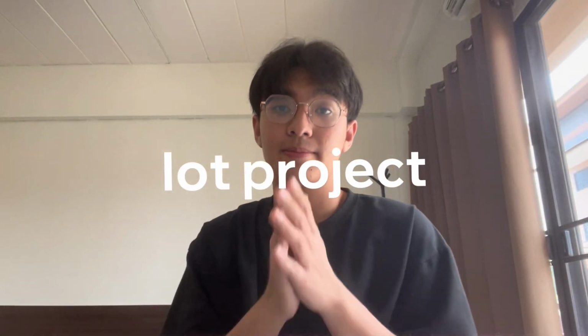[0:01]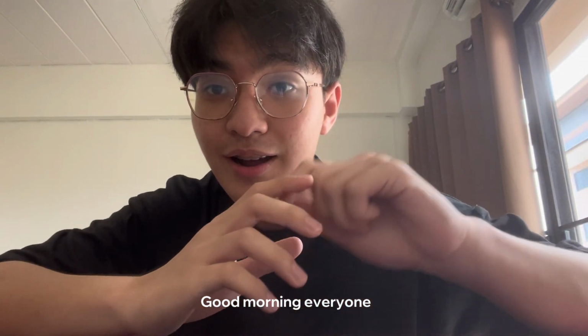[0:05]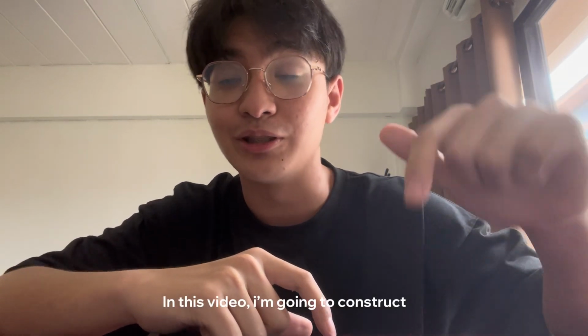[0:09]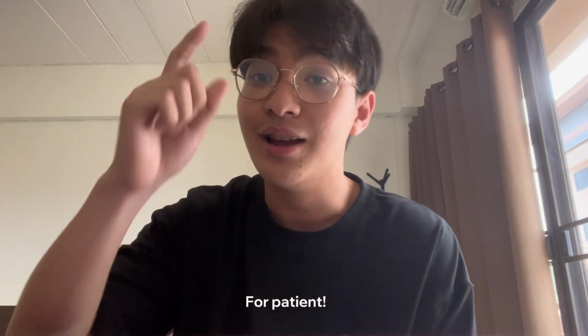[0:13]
Good morning everyone. Currently I'm studying biomedical engineering, and in this video I'm going to construct the healthcare monitoring box for patients in the hospital. Let's go.
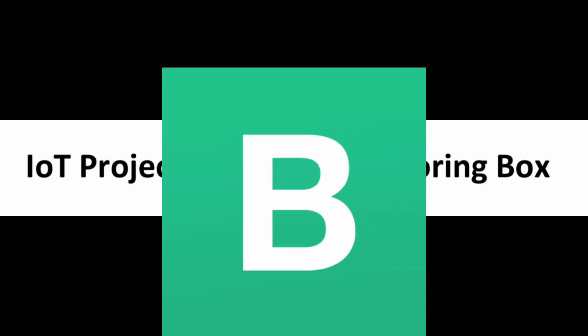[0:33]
Yes, so before we begin, I would like to talk about the purpose of this project first. This is an IoT-based health monitoring system that allows users to track the temperature and humidity of a patient room in real time using the Blynk application. However, this box provides only basic measurements, including the oxygen in blood, heart rate, room temperature, and room humidity.
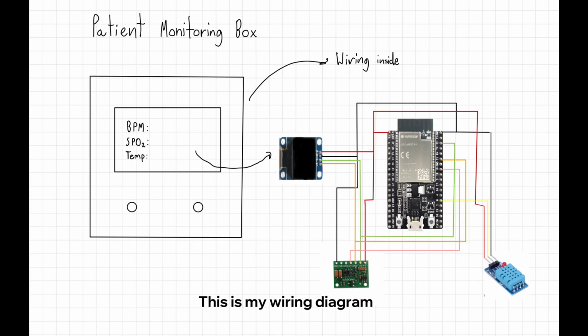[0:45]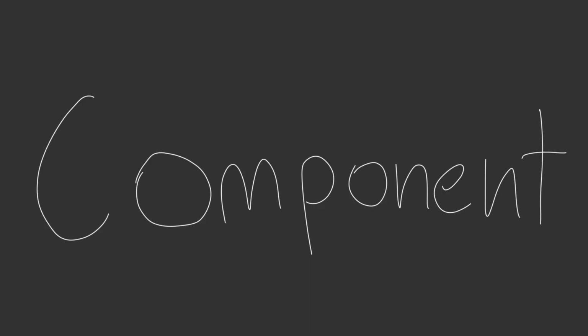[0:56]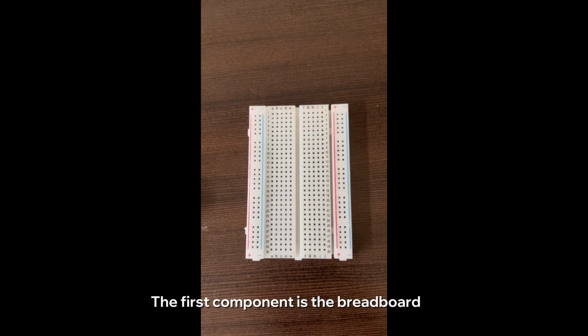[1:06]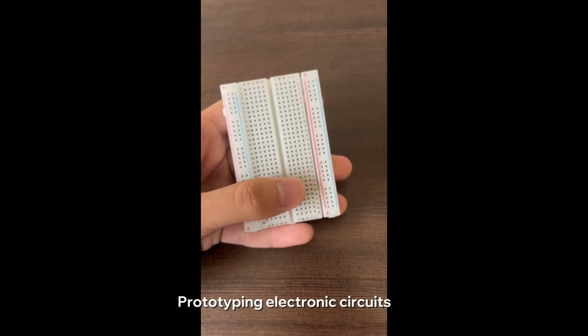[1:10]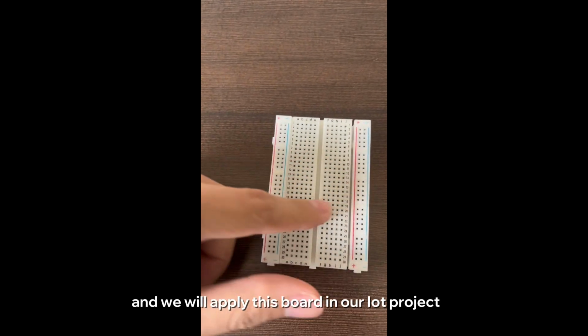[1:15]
Yeah, so this is my wiring diagram and drawing of the box. Sorry for my rough drawing, but we will follow this plan for the project. Okay, as you can see in the wiring diagram, these are the components that we will use in this project. Okay, let's take a look at each component. So the first component is the breadboard, which is a tool used for prototyping electronic circuits without the need for soldering, and we will apply this board in our IoT project.
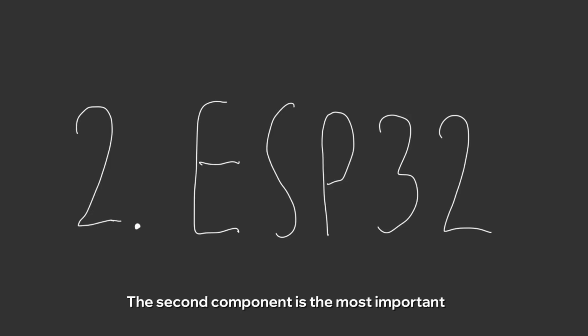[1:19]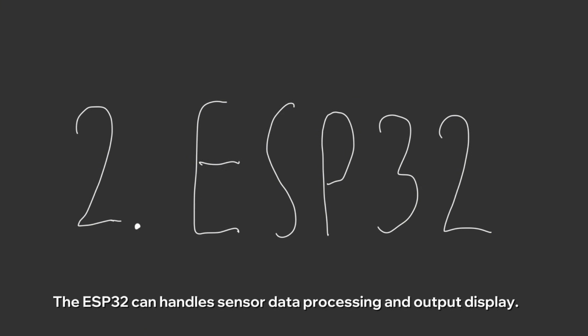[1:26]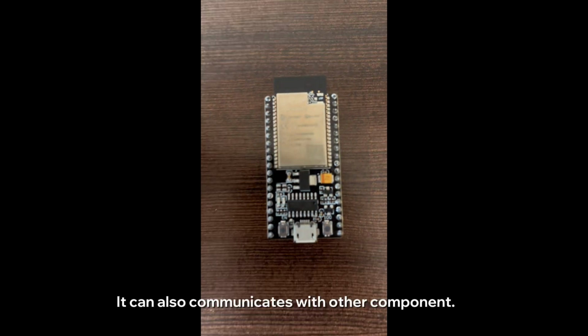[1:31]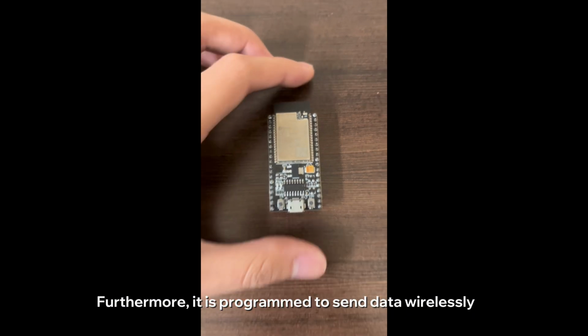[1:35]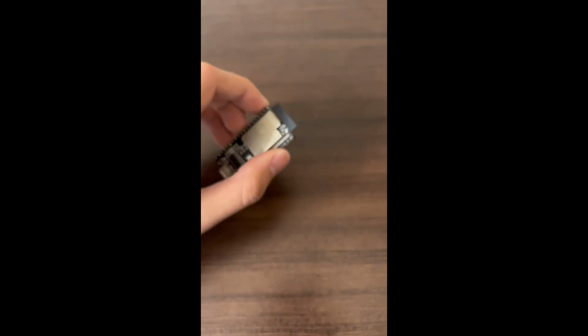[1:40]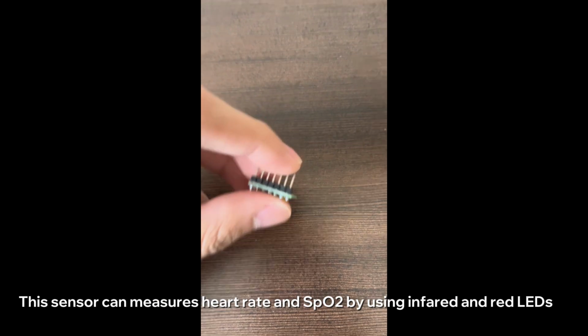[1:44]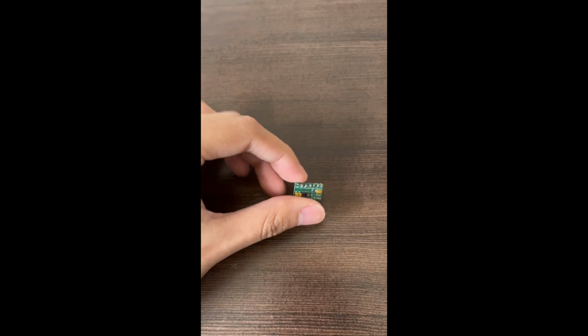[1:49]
The second component is the most important. It is the ESP32, which is the core of the system. And the ESP32 can handle sensor data processing and output display. It can also communicate with other components. Furthermore, it is programmed to send data wirelessly via Wi-Fi to connect with the Blynk application. The third component is the pulse oximeter. This sensor can measure heart rate and SpO2 by using the infrared and red LEDs.
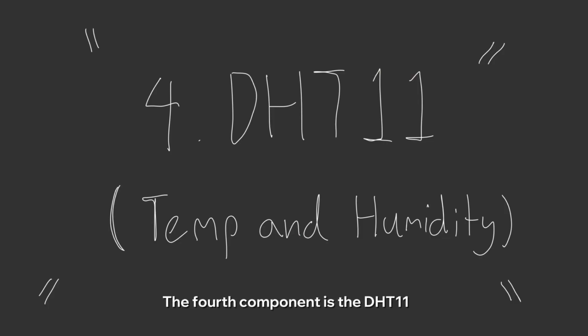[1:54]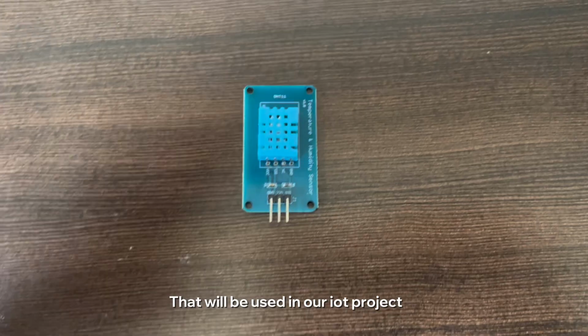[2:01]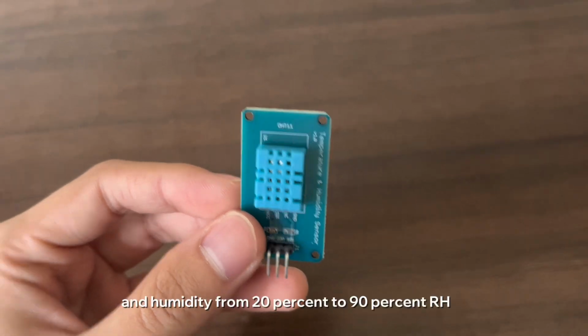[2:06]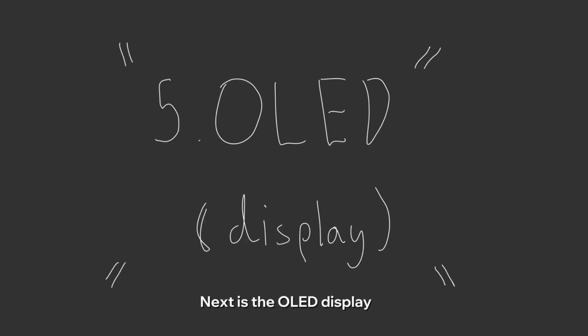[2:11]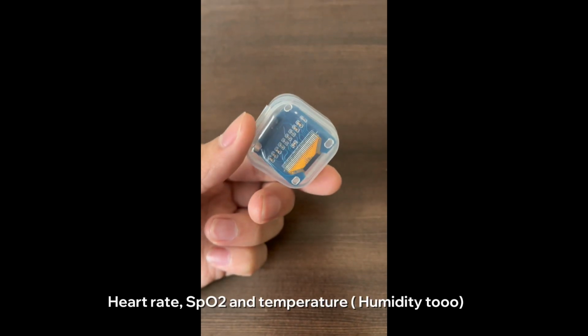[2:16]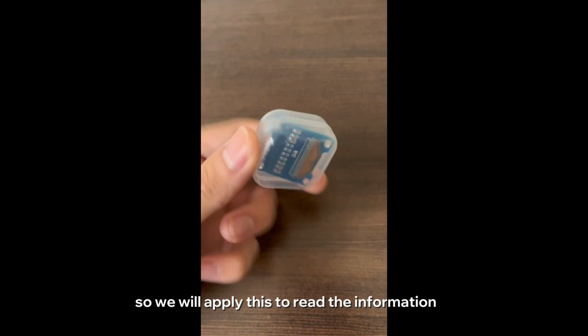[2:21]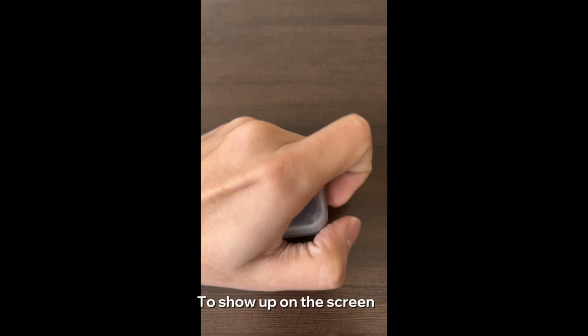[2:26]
The fourth component is the DHT11. It is a digital temperature and humidity sensor that will be used in our IoT project. It measures temperature from 0 Celsius to 50 Celsius and humidity from 20% to 90% RH. Next is the OLED display. The OLED screen can show real-time readings of heart rate, SpO2, and the temperature. So we will apply this to read the information that comes from other components to show up on the screen.
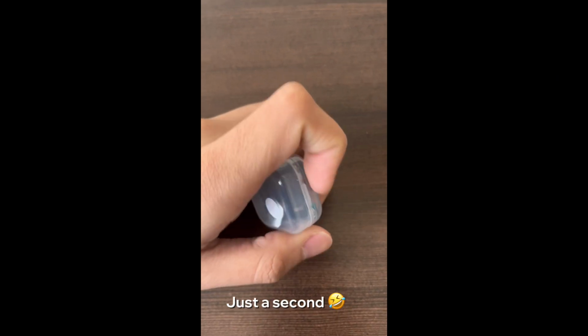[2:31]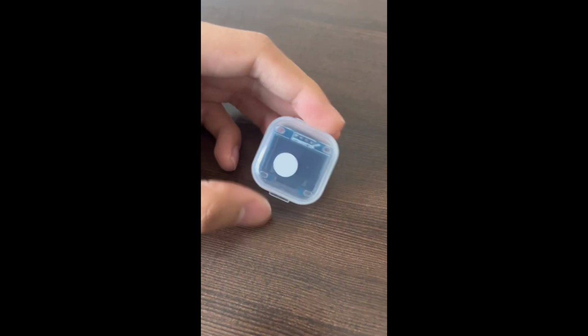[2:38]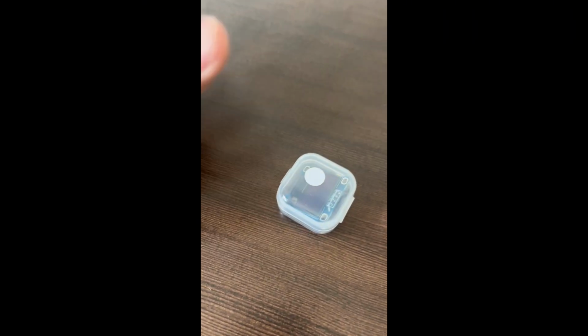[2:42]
Okay, let me open it for you guys. Just a second. I can't open it, bro. Okay, never mind. Okay.
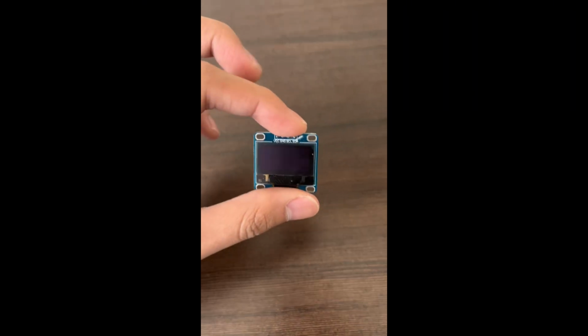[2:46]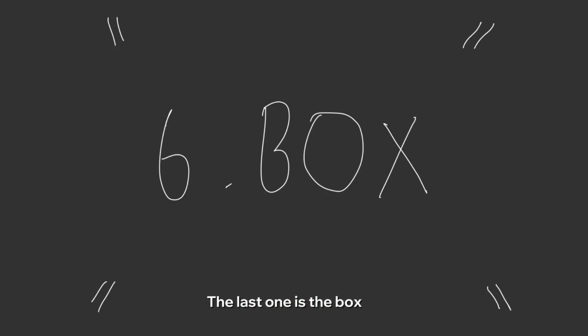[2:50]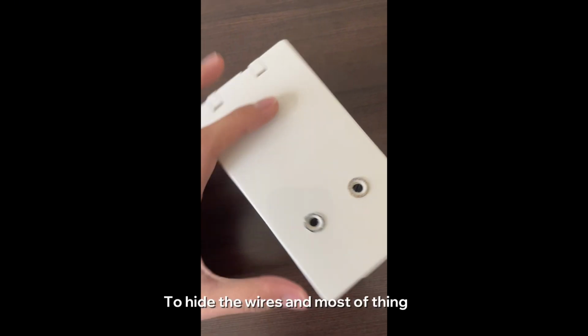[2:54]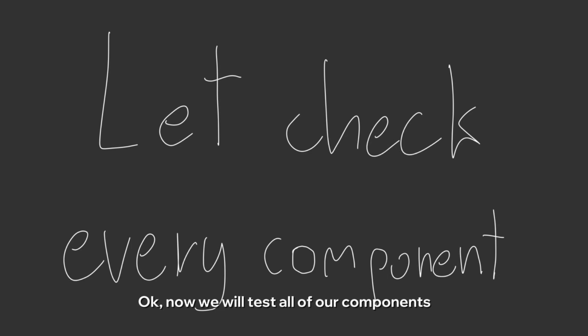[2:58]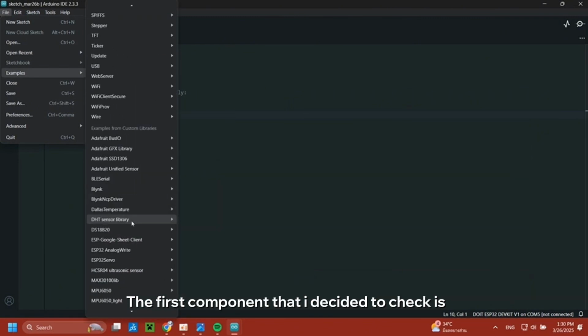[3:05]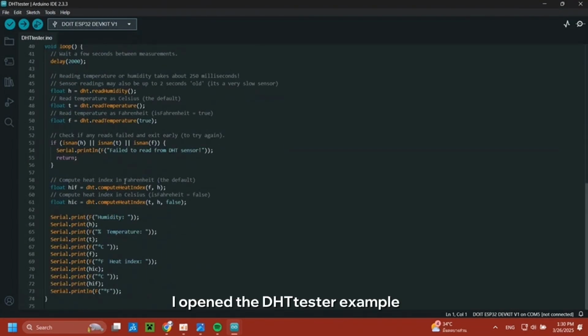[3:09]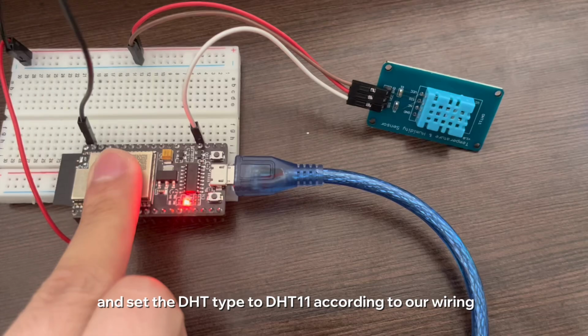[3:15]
The last one is the box that we will put the components inside to hide the wires and most of the things. Okay, now we will test all of our components by combining them with the code provided by the libraries. The first component that I decided to check is the DHT11. I open up the DHT tester example and then I change the pin to 15 and set the DHT type to DHT11 according to our wiring.
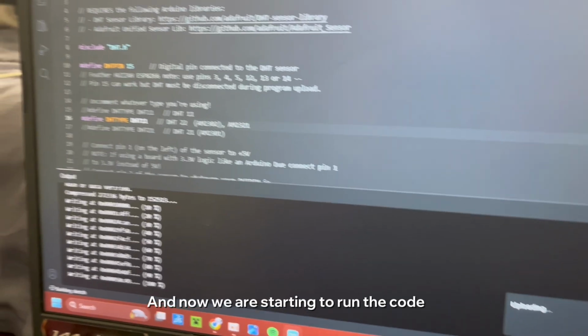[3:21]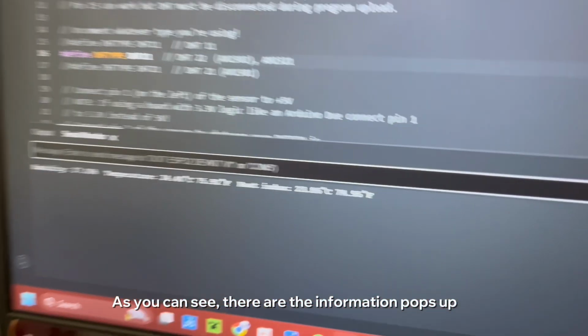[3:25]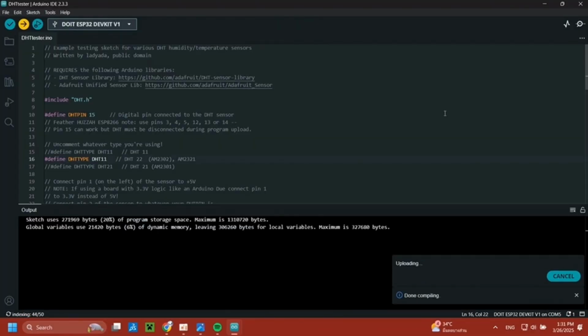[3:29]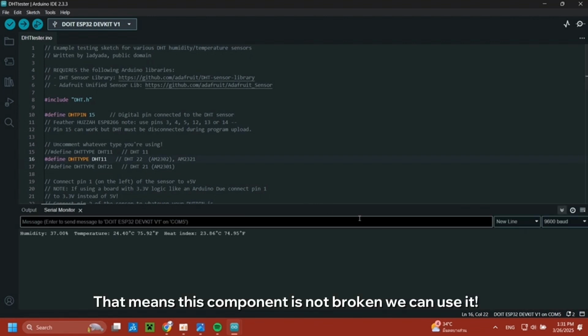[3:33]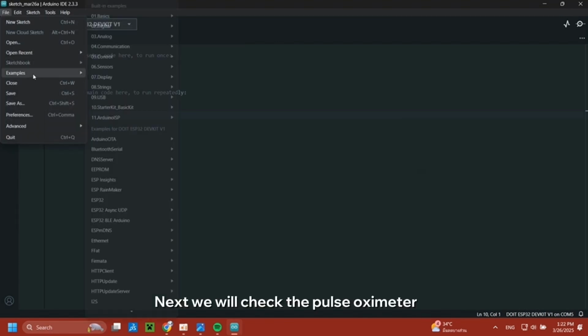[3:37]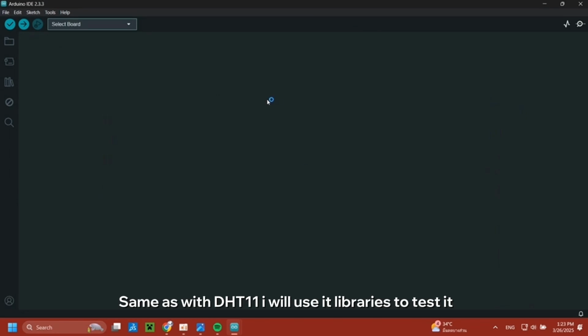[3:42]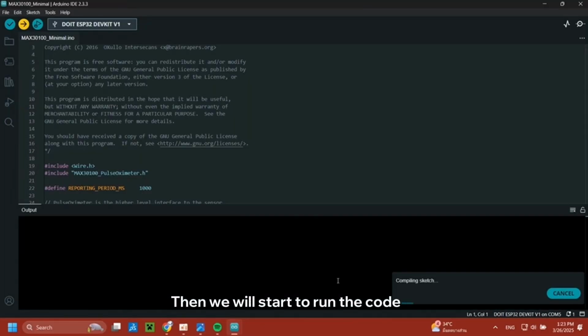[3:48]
And now we start to run the code, and as you can see, the information pops up in the serial monitor. That means this component is not broken, we can use it. Okay, next we will check the pulse oximeter. Same as with the DHT11, I will use this library to test it. This is a picture of our wiring, then we will start to run the code.
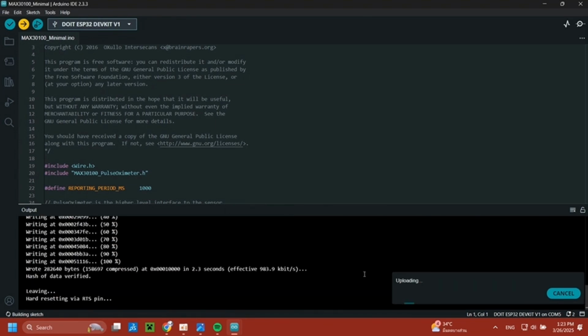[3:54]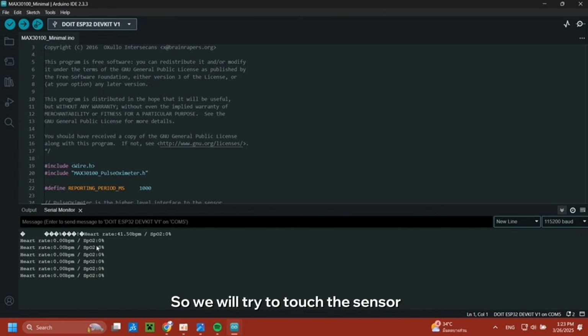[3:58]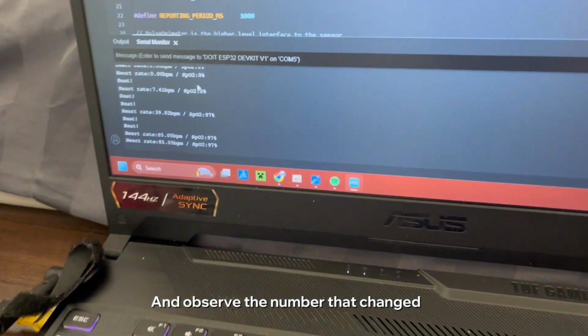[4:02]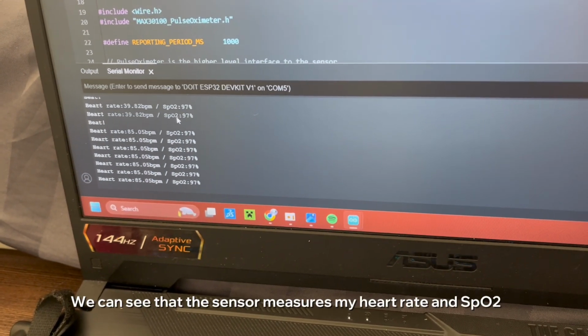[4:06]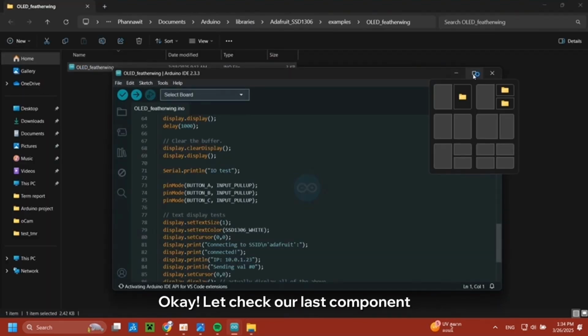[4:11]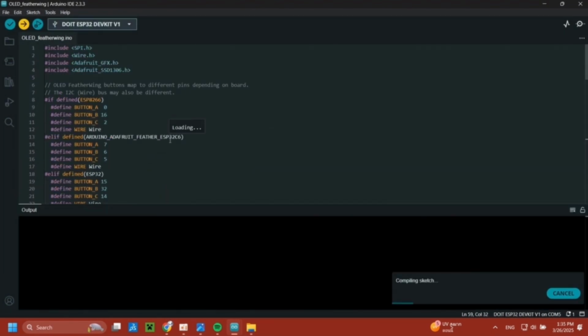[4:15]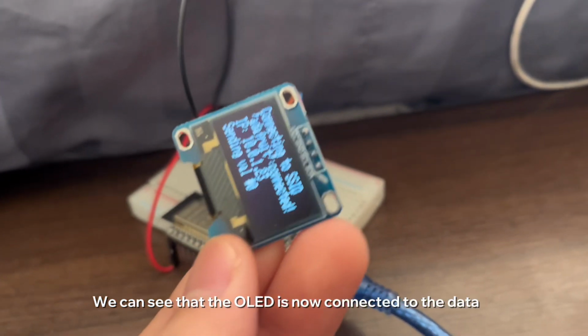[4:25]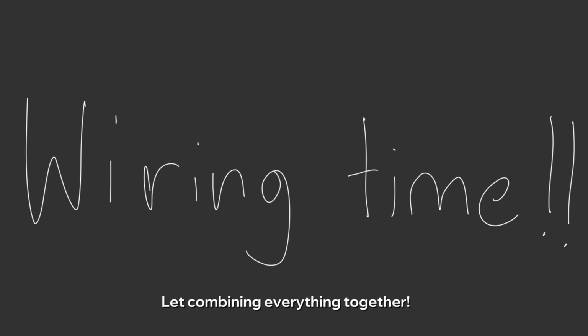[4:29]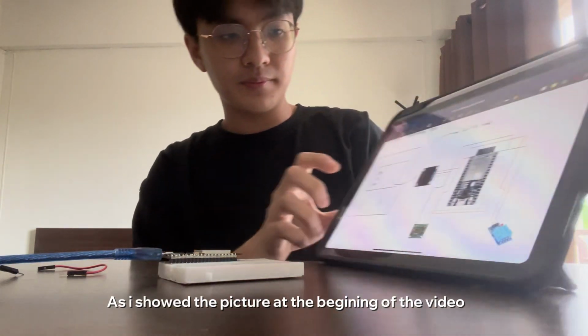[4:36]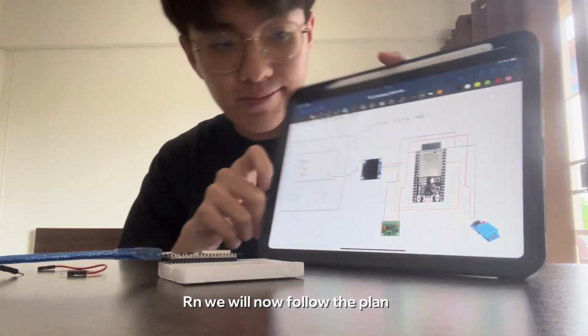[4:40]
Okay, now the data pops up, so we will try to touch the sensor and let's observe the number that changes. And we can see that the sensor measures my heart rate and SpO2. Okay, let's check our last component. Okay, now we can see that the OLED is now connected to the data. Okay, now let's combine everything together. Okay, as I showed in the picture at the beginning of the video, right now we will follow the plan.
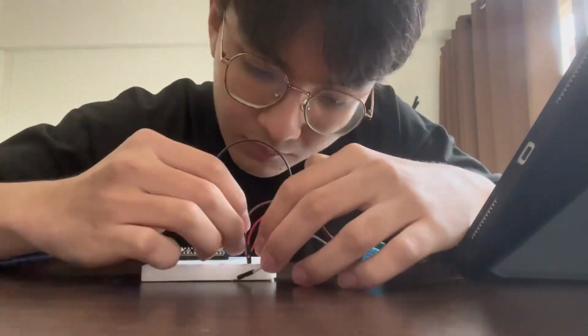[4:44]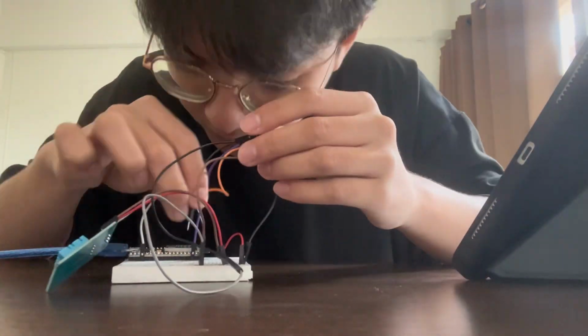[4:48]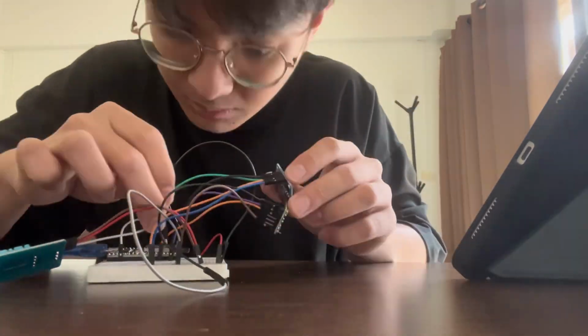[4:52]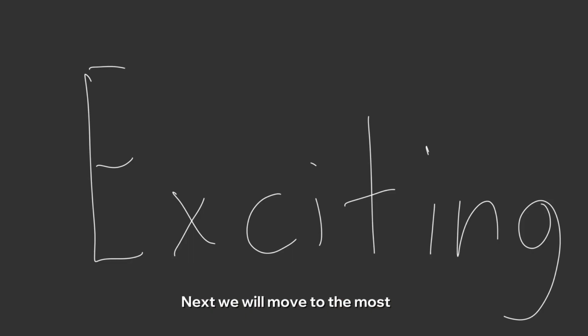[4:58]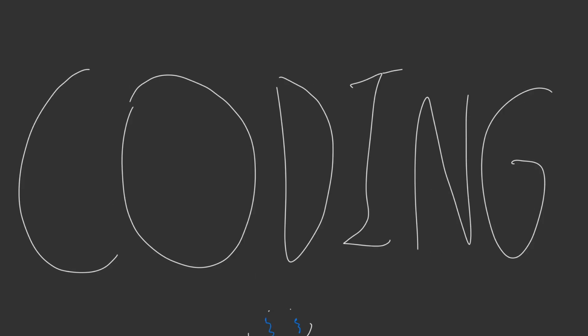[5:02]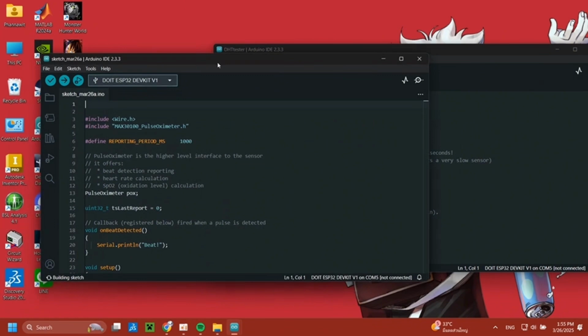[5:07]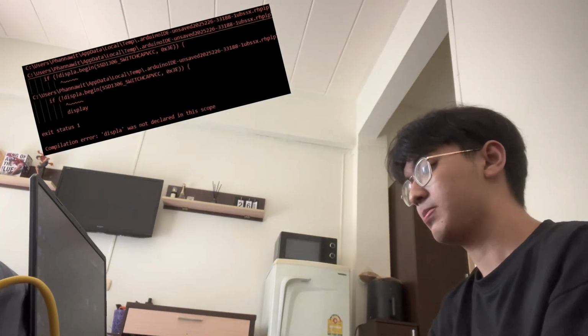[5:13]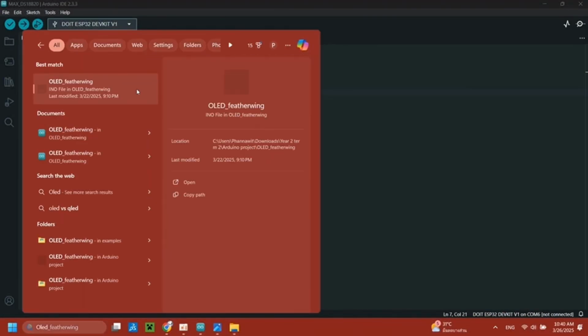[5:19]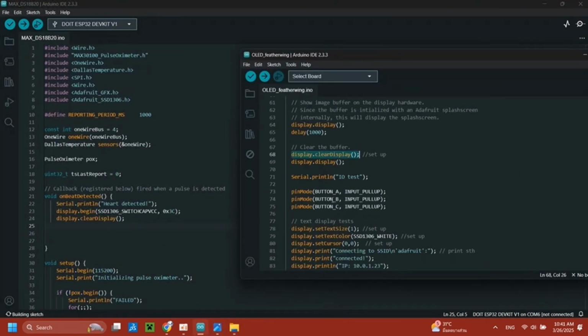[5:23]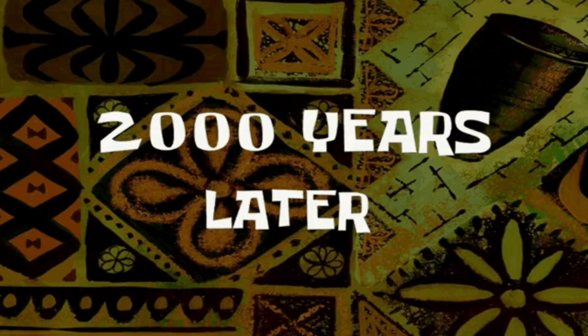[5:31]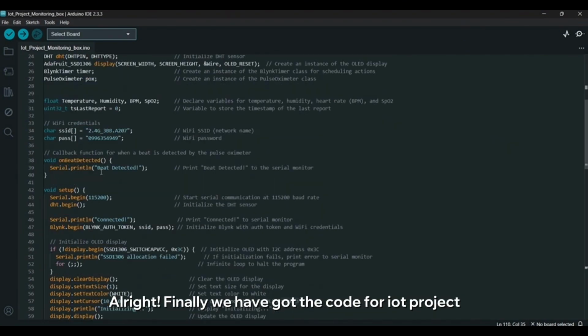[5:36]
Alright, the wiring is now complete. And next we will move on to the most exciting and fun part of the video. We call it coding. Alright, finally we have got the code for the IoT project. So let's look into it.
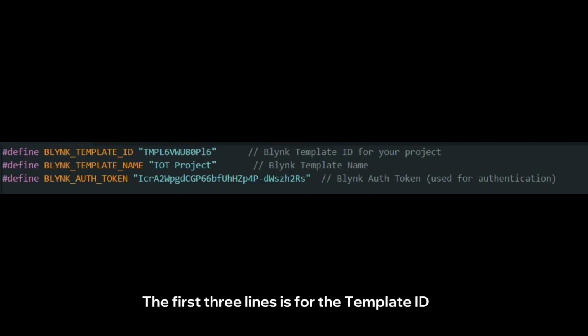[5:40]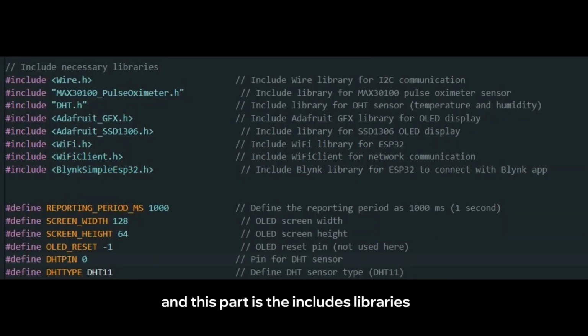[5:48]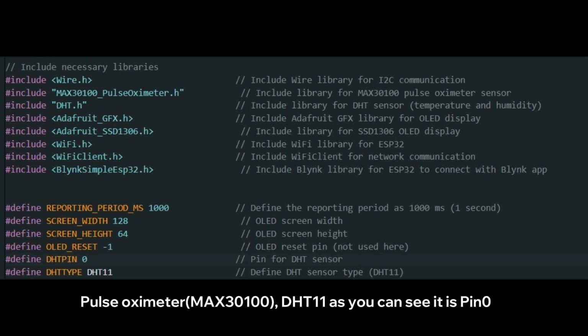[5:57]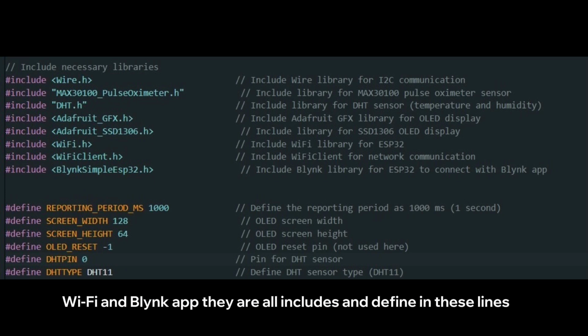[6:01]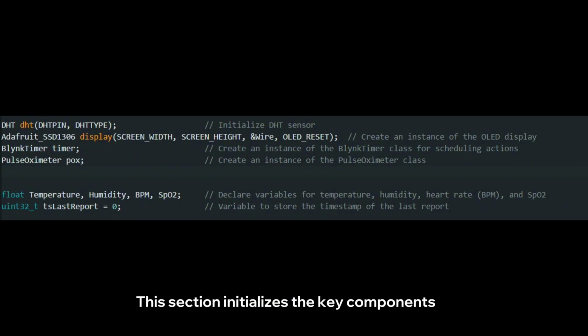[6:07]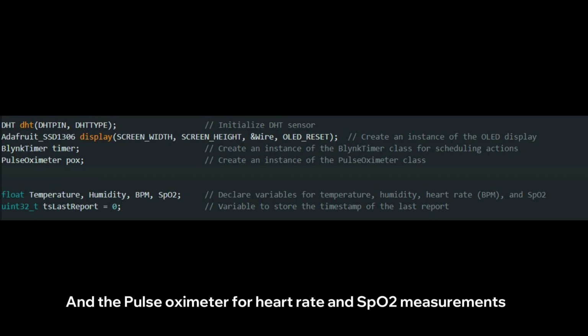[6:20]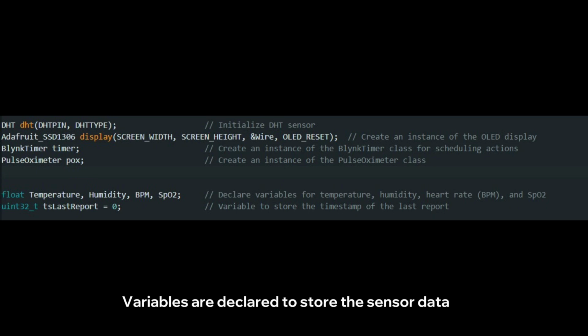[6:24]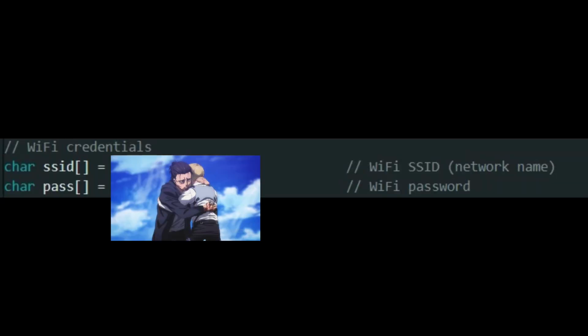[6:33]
The first 3 lines are for the template ID, template name, and the Blynk token to connect to Blynk. And this part is the include libraries for different components. In this project, it sets up the communication with an OLED display, pulse oximeter, and the DHT11, which as you can see is on pin 0, and Wi-Fi and the Blynk app are all included and defined in this line. This section initializes the key components, including the DHT sensor for temperature and humidity, the OLED display for output, the Blynk timer for scheduling tasks, and the pulse oximeter for heart rate and SpO2 measurement. Variables are declared to store the sensor data, with a variable taking the time of the last update for periodic reports. And these 2 lines are the password for connecting the Wi-Fi.
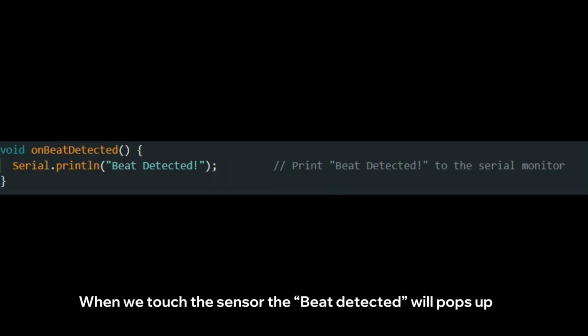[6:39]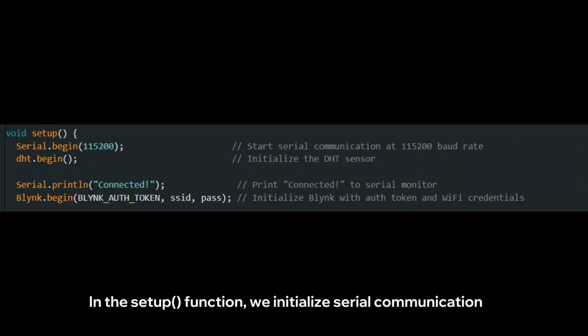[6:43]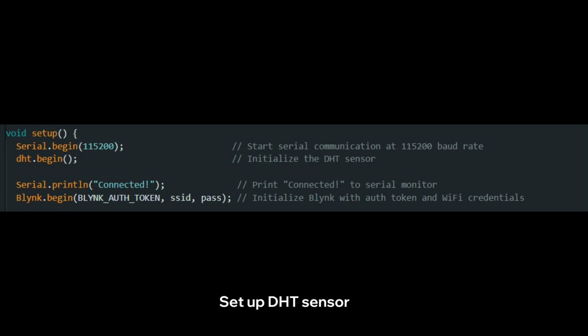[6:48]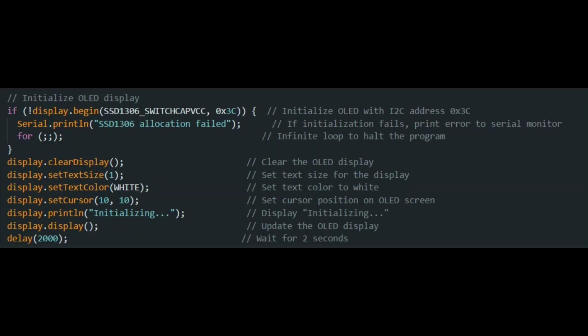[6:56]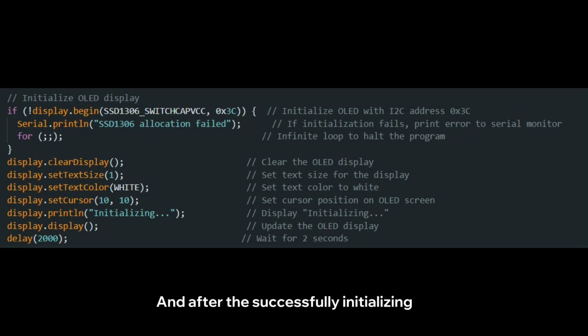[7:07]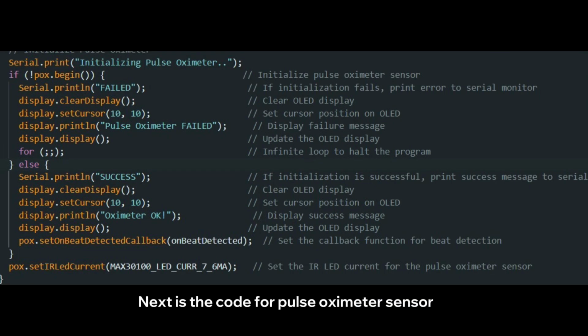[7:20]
For this line, when we touch the sensor, the beat detected message will pop up. In the setup function, we initialize serial communication and set up the DHT sensor and connect the ESP32 to Wi-Fi and the Blynk app. This section is the code for the OLED display. If the initialization fails, it will print an error message to the serial monitor. And after successfully initializing, it will clear the display. And I have set the text size and the colors and position also, and it will show the message initializing for 2 seconds. Next is the code for the pulse oximeter sensor. If it fails, an error message is displayed and the program will stop. If successful, it prints a confirmation, updates the OLED display, and sets a callback for beat detection.
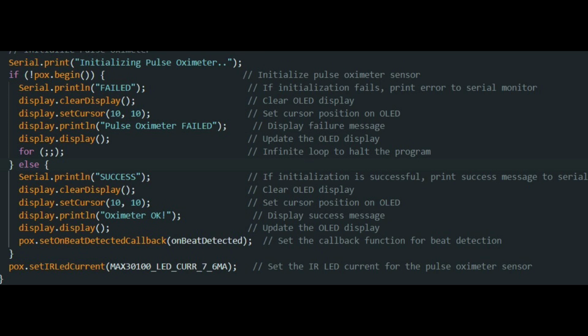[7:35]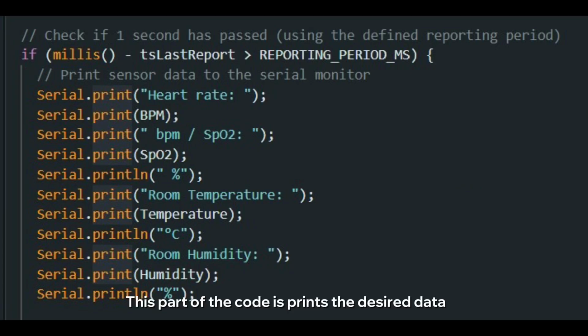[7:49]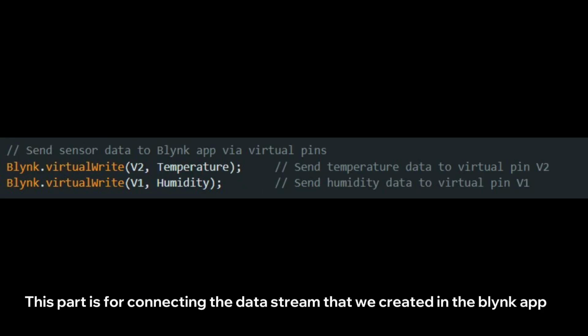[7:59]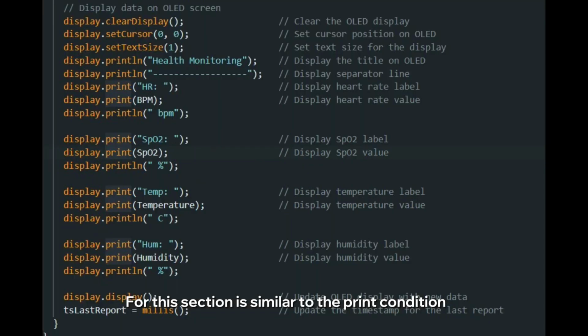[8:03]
Okay, now we made the while loop. This loop function continuously runs the Blynk app, updates the pulse oximeter, and reads temperature, humidity, heart rate, and SpO2 data. This part of the code is to print the desired data. If the condition is met, the program will display the sensor reading. This part is for connecting the data stream that we created in the Blynk app. This section is similar to the print condition, but it's specifically for the OLED display.
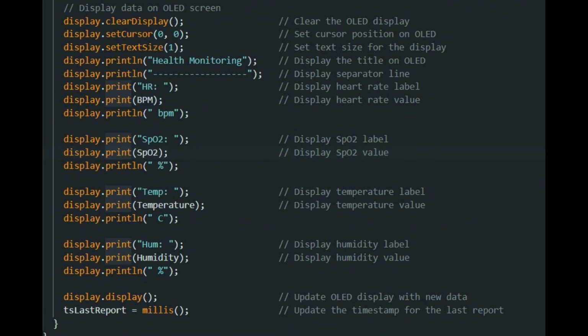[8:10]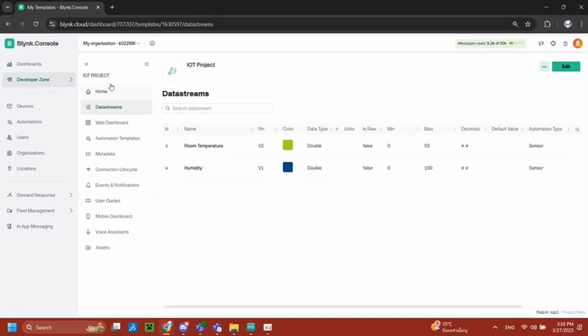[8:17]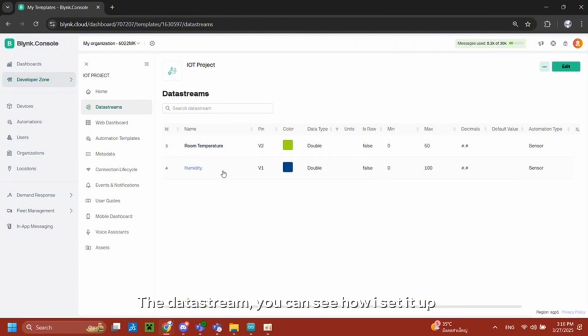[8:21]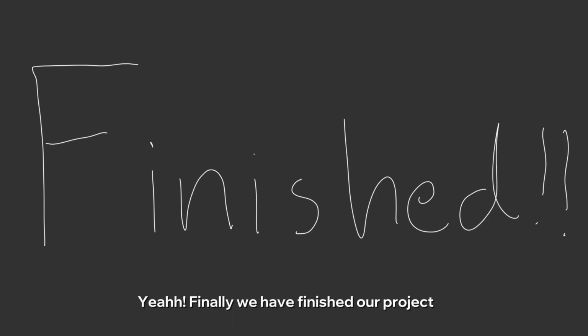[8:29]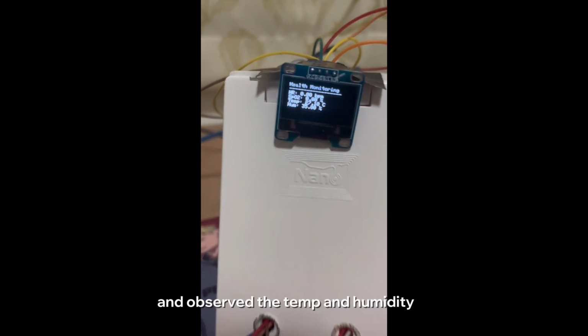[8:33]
Okay, now we will set up the Blynk app to connect with our ESP32. Okay, as you can see, I have already prepared the data stream. You can see how I set it up, and I have also created the web dashboard to read the data. Yeah, finally we have finished our project. Let's see what happened after we run the code and observe the temperature and humidity from the Blynk app.
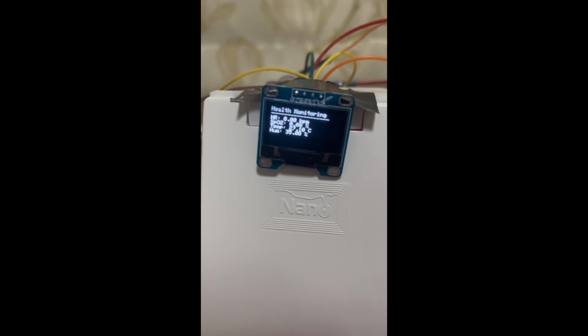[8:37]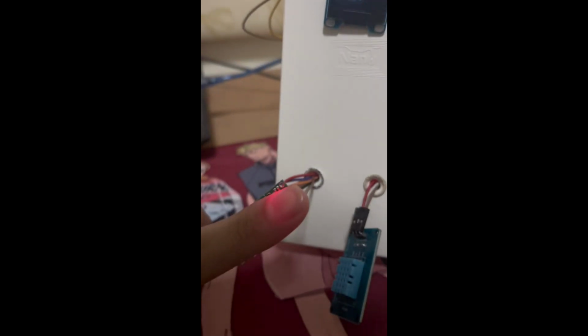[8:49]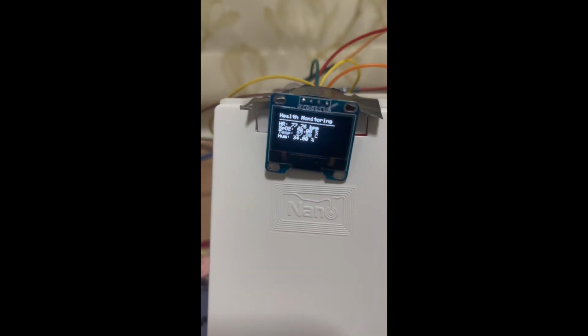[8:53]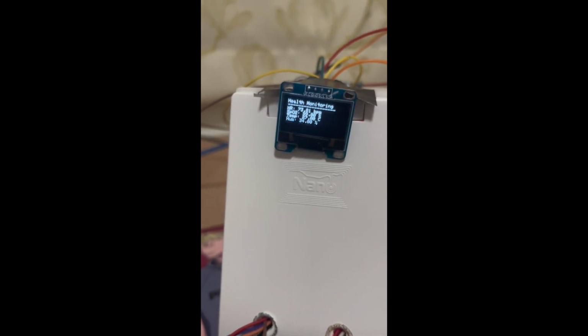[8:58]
Okay, that's the end of the video. I hope you enjoyed it and gained some insight from my project. Thanks for your attention.